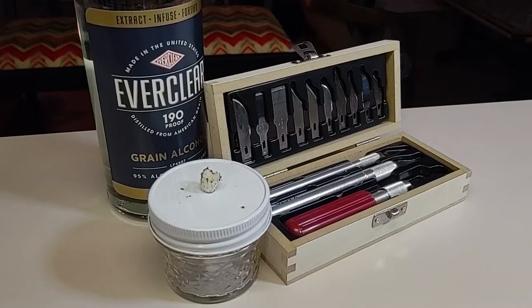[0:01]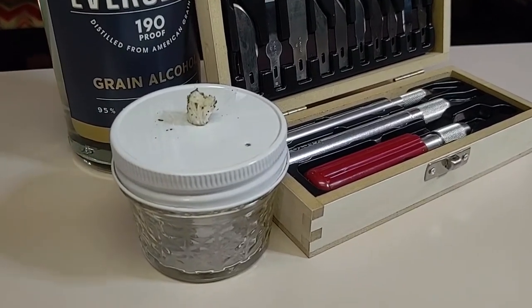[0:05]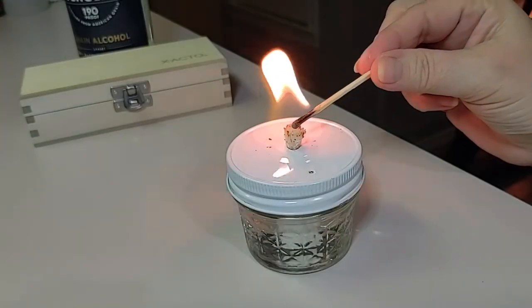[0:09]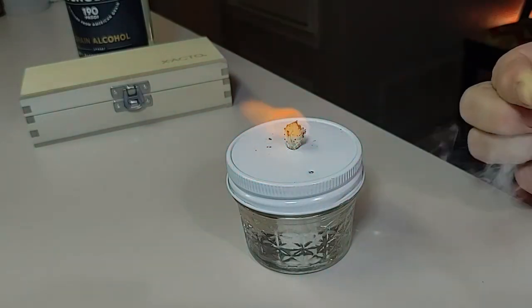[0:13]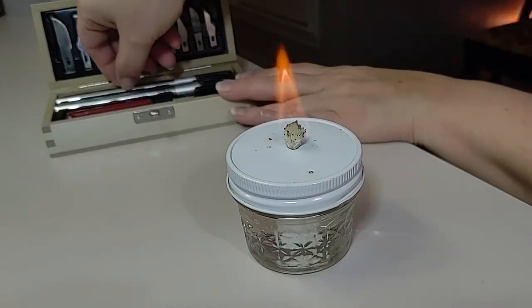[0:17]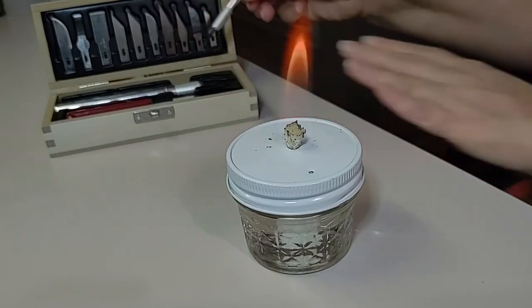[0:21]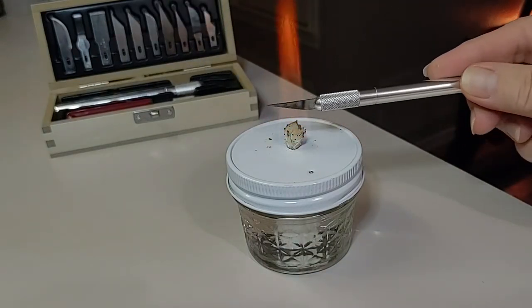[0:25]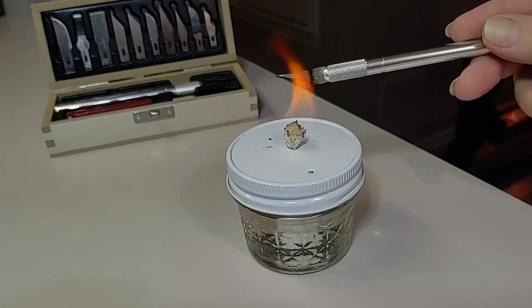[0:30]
I'm the husband. I am the wife, and in this video, we're going to show you our DIY alcohol lamp that we use for sterilizing utensils and tools when working with agar, more specifically when cloning and transferring. Sterilizing your utensils is key to being successful in mycology, as it will ensure that you don't transfer unnecessary contaminants to your clean petri dishes.
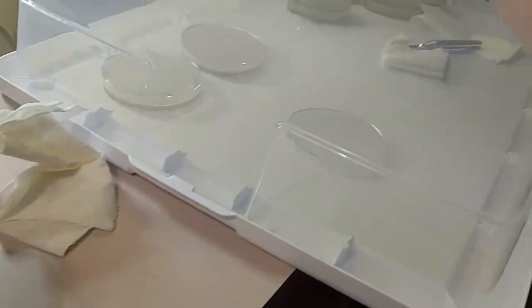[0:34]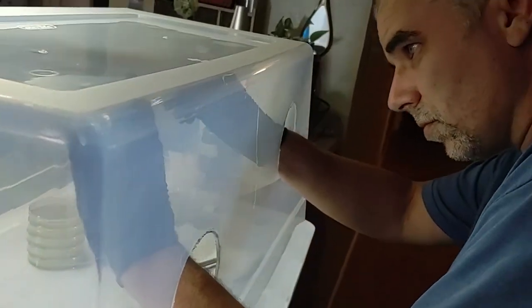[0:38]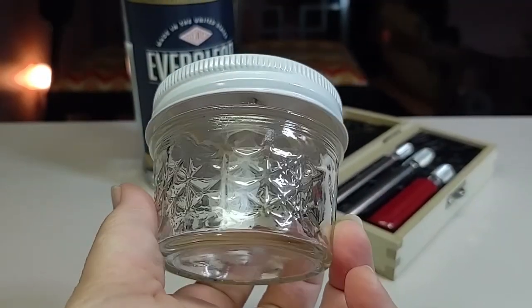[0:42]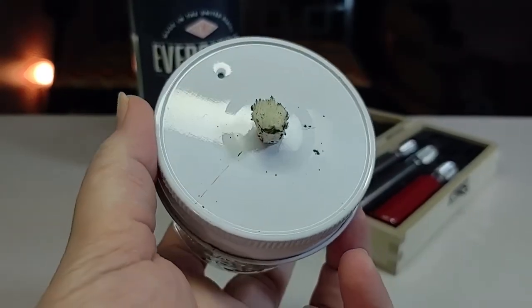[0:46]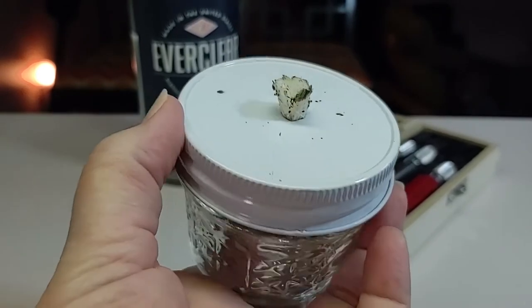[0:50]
In an ideal lab environment, you would have Bunsen burners to utilize to sterilize your scalpels. In this video, we'll show you an easy do-it-yourself way to achieve the same lab results. We use 190 proof alcohol in our lamp to create a clean burn environment that we can use inside.
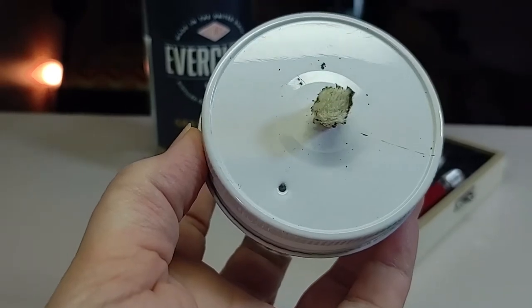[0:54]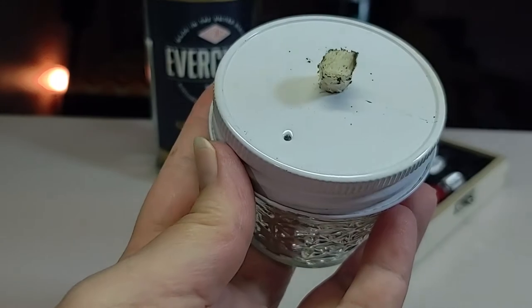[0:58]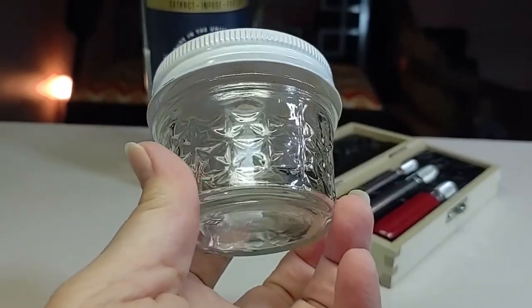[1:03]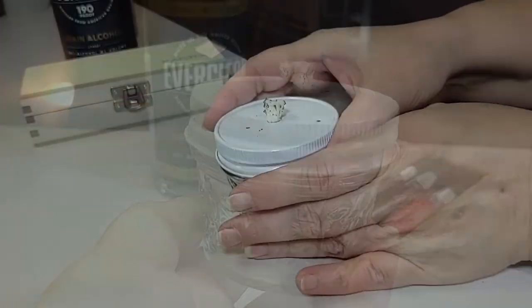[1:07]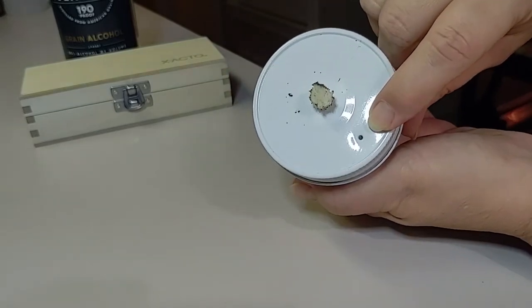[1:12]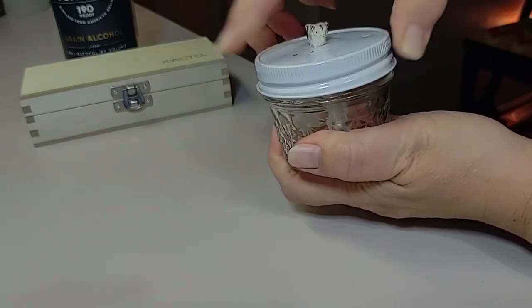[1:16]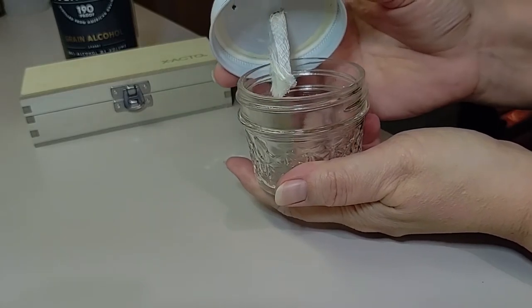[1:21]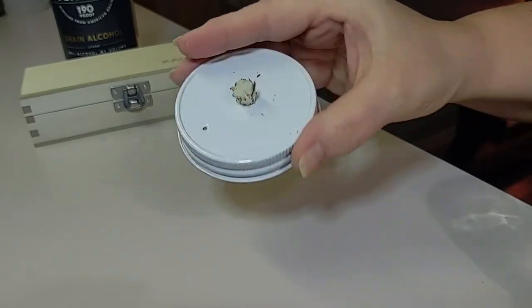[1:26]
You will need a 4-ounce glass jar and a lid. You can use the 2-part lid that comes with the jar, or use any lid that creates a tight fit. You will also need a wick. You will need to create a second smaller hole for airflow, so nothing is combustible, nothing blows up, and that there's airflow, and that you also don't want the alcohol to spew up around where the lid meets the wick.
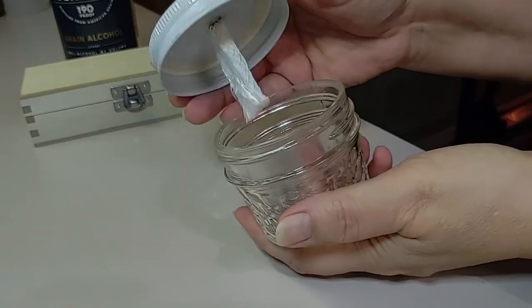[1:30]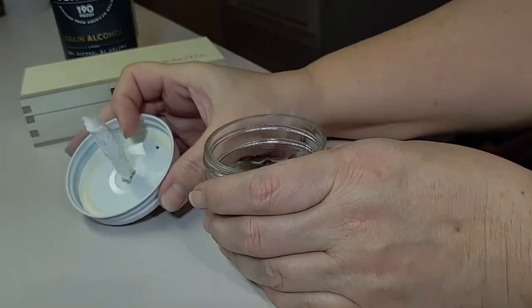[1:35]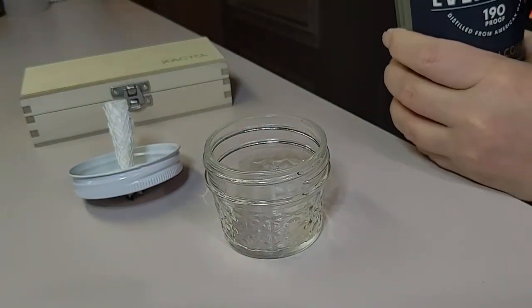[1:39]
The wick that we used for this lamp came from the dollar store. It came in a 2-pack for $1. I simply cut it in half and then cut that half in half widthwise.
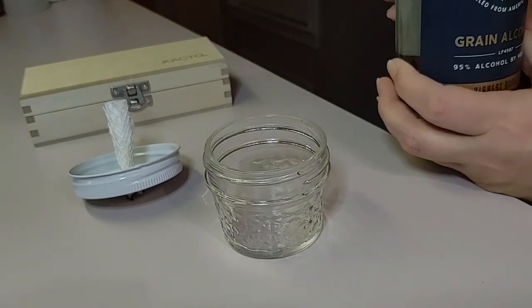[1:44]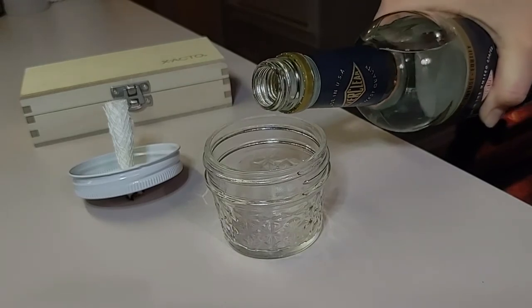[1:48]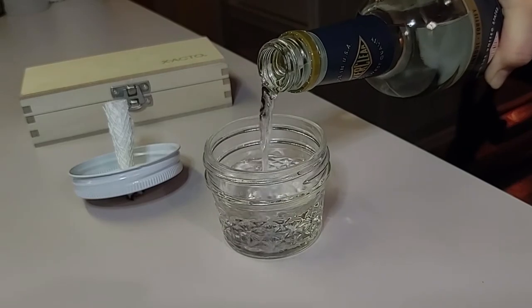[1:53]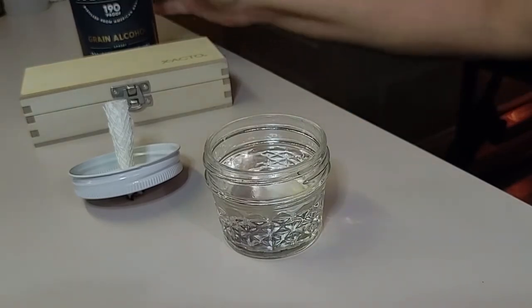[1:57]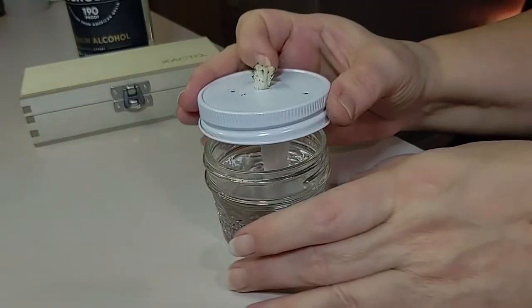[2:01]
So when creating your hole on the top of your lid, you want to make sure that the hole for the wick is a tight fit so that alcohol does not spew out around the wick. You also want to make sure the wick fits all the way down to the bottom of the jar so it's able to pull up the alcohol all the way at the bottom.
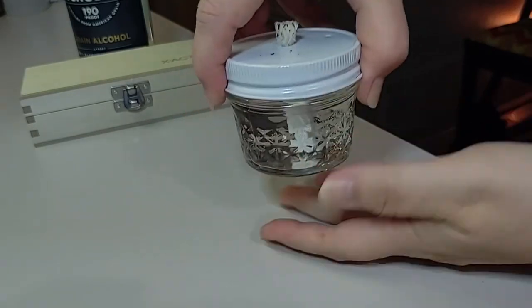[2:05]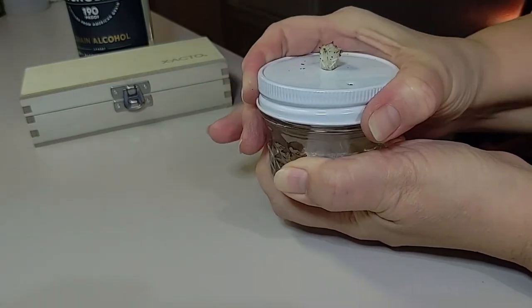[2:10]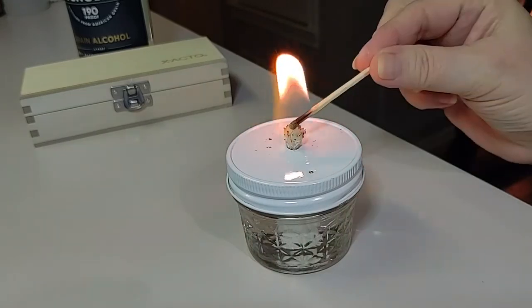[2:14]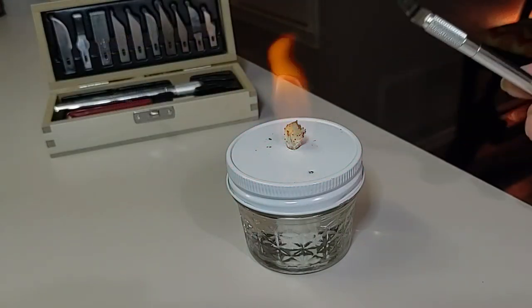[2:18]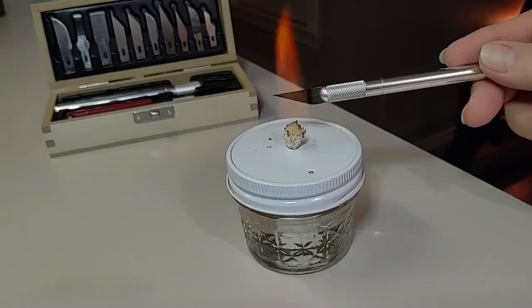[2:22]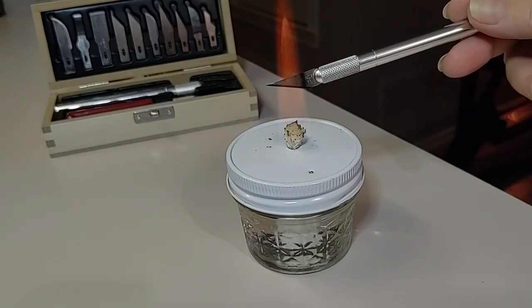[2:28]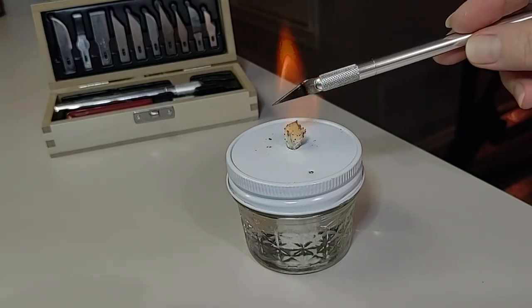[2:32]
We use 3 ounces of 190 proof alcohol in our 4-ounce lamp. This lasts us well over an hour. And if you're curious about our X-Acto knife kit, we picked that up for about $15 from a local supermarket, hobby shops, and I'm sure Amazon has it as well. We really enjoy the convenience of having so many different blades to work with.
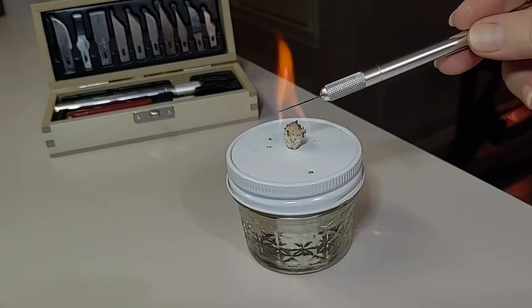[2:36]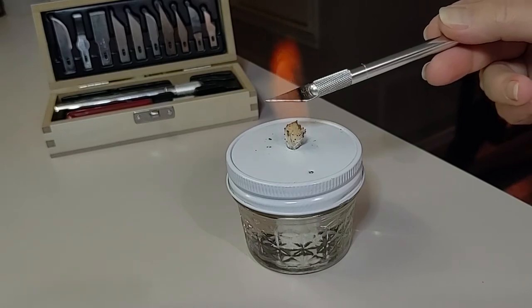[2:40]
When you're finished, you can pour the alcohol back into the bottle, or you can simply leave it in your alcohol lamp. It will end up absorbing through the wick and dissipating.